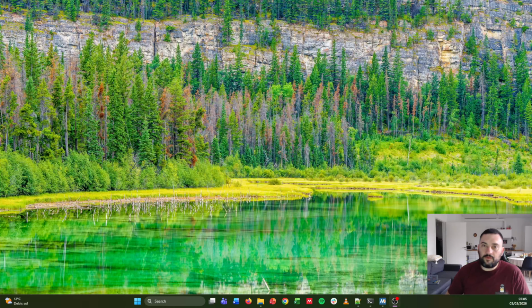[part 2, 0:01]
If you were watching our previous videos on SDK, in them we already covered Python SDK for Windows, Python SDK for Linux, and C SDK for Linux. What I'll do in this specific video, I'll reuse my Linux code, the code developed in Linux to control Raman. I'll reuse it on Windows. I'll show which modifications have to be done, which are very minimal, and then I will start with compiling the code. Then I'll do the live demo with Raman. We'll measure the Lightnovo polystyrene sample. In the beginning, I'm attaching it to the probe.
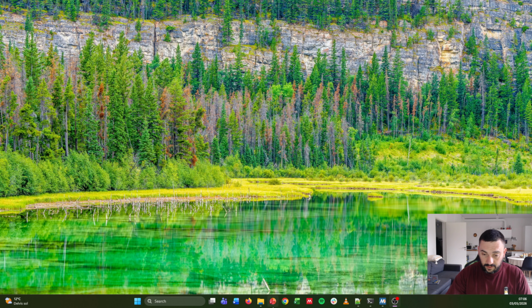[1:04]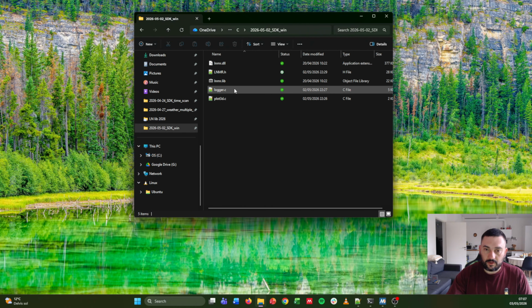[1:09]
So what we have here in my working directory, it's this program logger.c, which is the program controlling the spectrometer, then logging the data to the CSV file, streaming the data to another app which is performing live visualization. And plot3d is like a helper. It's not using our SDK, but it would be reading the CSV files which were logged. And then we have the components supplied with our SDK. It's .dll file, .h file, and .lib file.
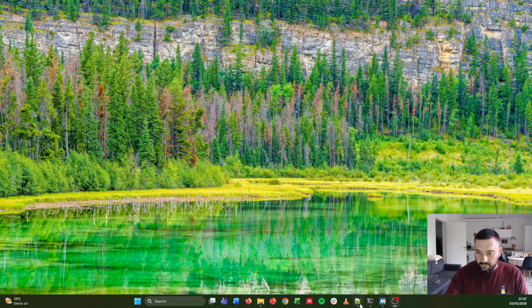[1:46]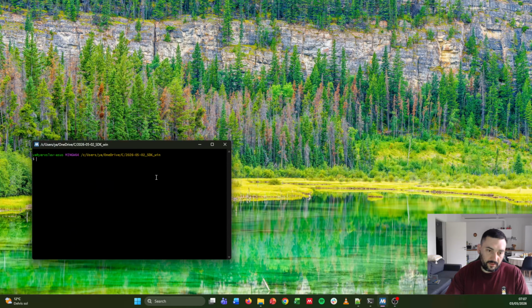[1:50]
On my system, I have a GNU minimalist installation of C for Windows with MinGW 64 terminal, but our SDK also works well if you compile the files with Microsoft Visual Studio components, I mean MSVC, the Microsoft version of C. Anyways, my terminal is using GCC, and I compile gcc logger.c -o logger.exe, and then we have to specify our DLL, Winema.dll, enter, boom, compiled.
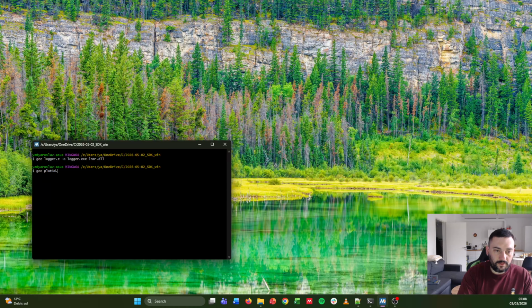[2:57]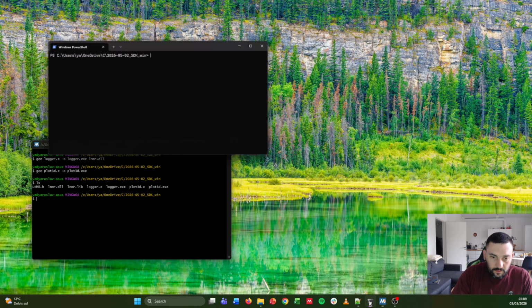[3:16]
The next step would be to compile plot3d.c, again -o plot3d.exe, and that's it, without libraries. Okay, great, and we check, and the files are there. Then we need to launch them. We need to go to Windows PowerShell, and it's dot backslash, so it's the other way as in Linux, and then we launch
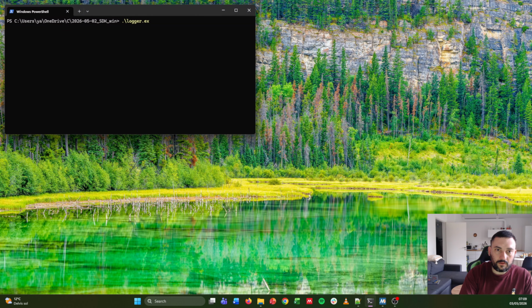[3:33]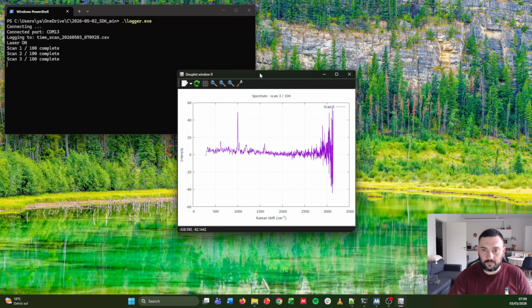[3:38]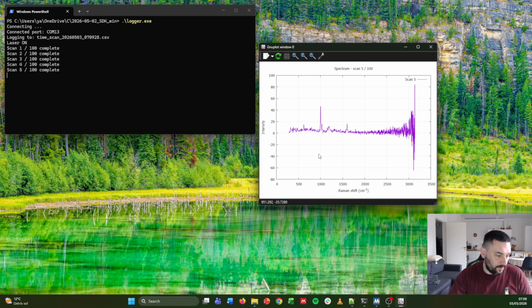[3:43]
logger.exe. And now we see the instance of GNU plot, and the app is performing the scans. In the beginning, it performed the scan of the ports, then it connected to the port to which Raman is connected, it's COM, then it started logging the data to the file with the timestamp in the name, then turns on the laser and performs the time scans. I limited the number of the scans to 100.
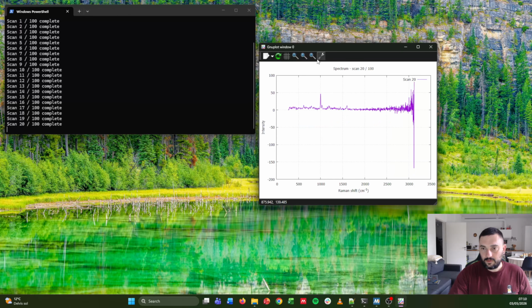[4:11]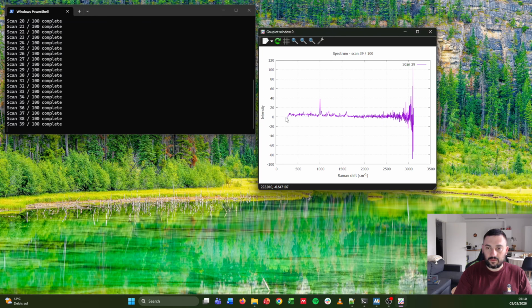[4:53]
The exposure time is exactly 300 milliseconds, but it takes a bit longer due to additional delays in the program as well as system specific delays, and it looks like the system specific delays are slightly longer on Windows than on Linux. That's why if you have a critical system, if you want to work with a real-time system, then it's advised that you use Linux, not Windows. Although for some workflows, for some pipelines, you need to stay with Windows if you use Windows specific tools, which also gives some power as well. So everything depends on your application. That's why we have so many different versions of SDK, basically 4 versions covering Windows, Linux, Python, C, 4 combinations in general.
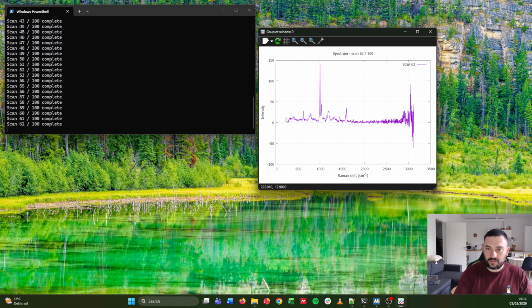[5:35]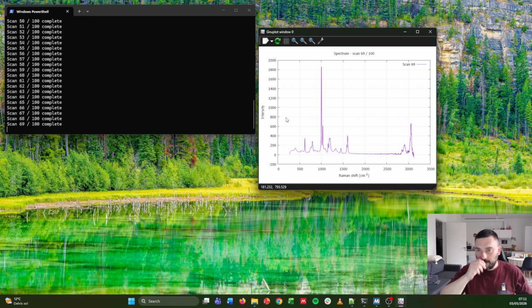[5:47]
So it's performed already 54 scans, but I see that the intensity was a bit low. Then I rotate the probe to increase the intensity so that we see some dynamics in the scan. So now the intensity is much higher. Let's wait for a while, and then I'll try to expose it to sunlight, and I'll point it in the direction of the sun, and we'll see how the 3D scans look like. Scan 76, 77. Let's wait. Okay, let's expose it to the sunlight,
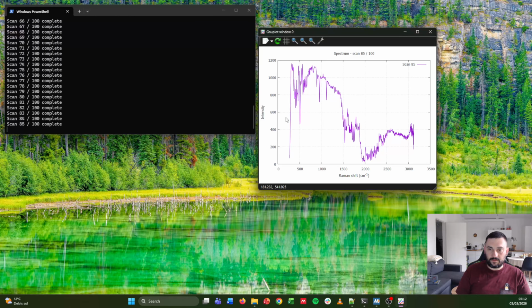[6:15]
and we see a solid spectrum with specific dips due to atmospheric absorption. Scan 91, 92, 93. Yeah, it's approximately slightly longer probably than 1 second. Definitely the performance of the same code was faster on Linux. You can watch the Linux video and you can compare. So we logged it, laser off, closed, done. Let's close the GNU plot
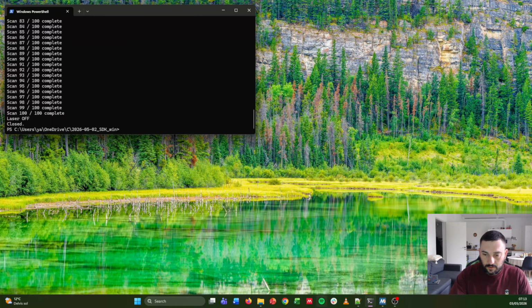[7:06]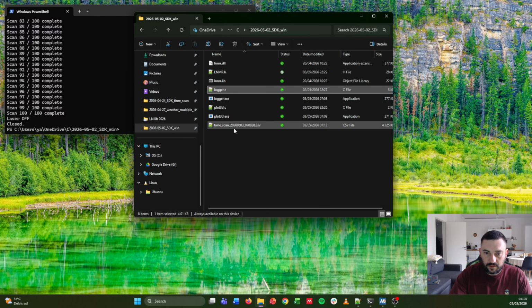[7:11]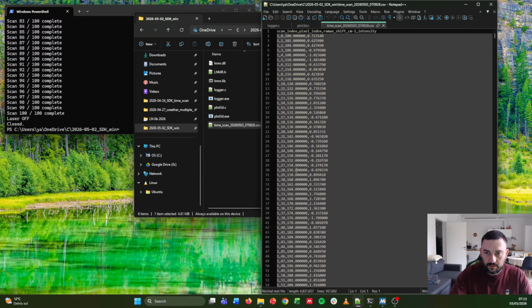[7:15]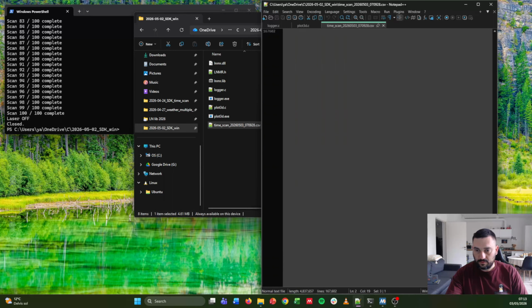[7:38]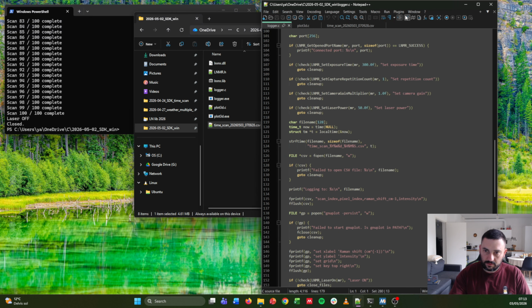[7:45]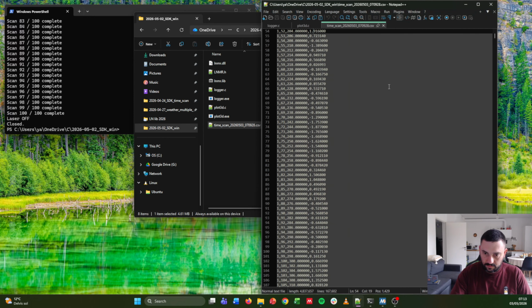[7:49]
and let's go to the folder over here, and then we have the timescan file appearing, and we double click on it, and as you can see, there are multiple columns in the file: scan index, then we have pixel number, pixel index, we have the Raman shift column, and we have the intensity column. And if we scroll down, Control N, we have 100 scans and 167,601 lines in the file.
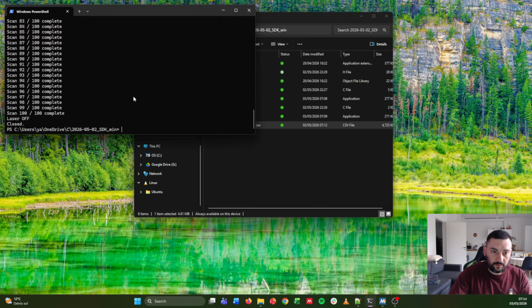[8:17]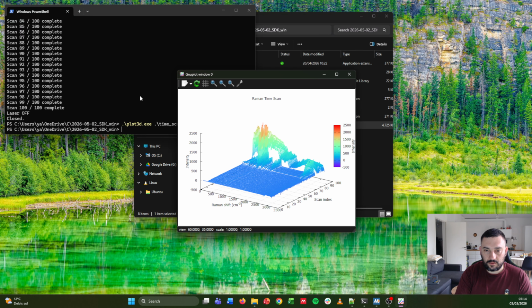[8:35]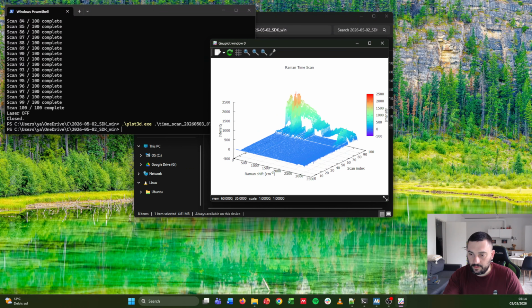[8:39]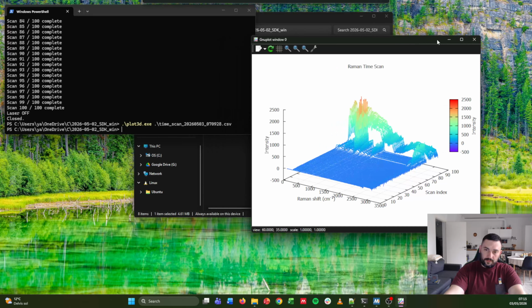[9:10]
So let's go back to the terminal over here, and we'll use plot3d.exe, and we supply the file name as a shell argument, launch. And this is what we have now. As you can see, in the beginning, if you remember, we had relatively low intensity of polystyrene here. Then we increased the intensity of polystyrene. It's like from the time scan from over here to over there. And then the last scans, they were solar spectrum. So I think this type of visualization looks really nice when we use the GNU plot engine.
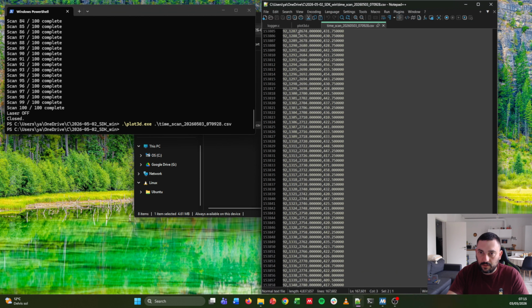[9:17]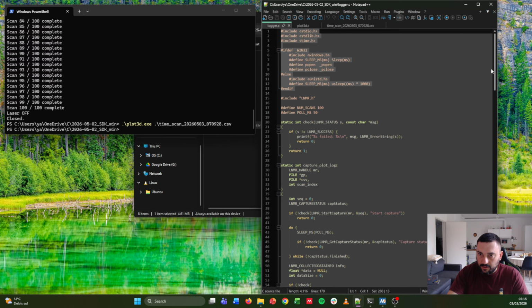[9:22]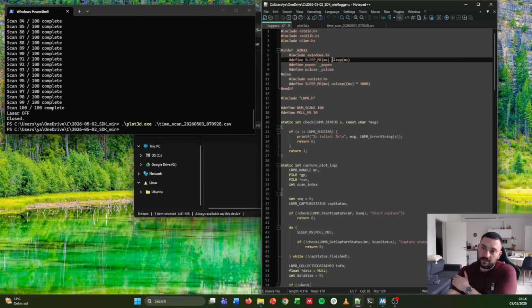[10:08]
Okay, so I actually promised to go through the code a little bit and explain what has to be modified when we port this app from Linux to Windows. Over here, this is the same, and the only difference is over here. Basically, this describes the difference and the fix. So in Windows, it's windows.h, so a system specific library, while in Linux and Unix it's unistd.h. And they have some differences. The delay in Windows is the function Sleep in milliseconds, while in Linux it's usleep in microseconds.
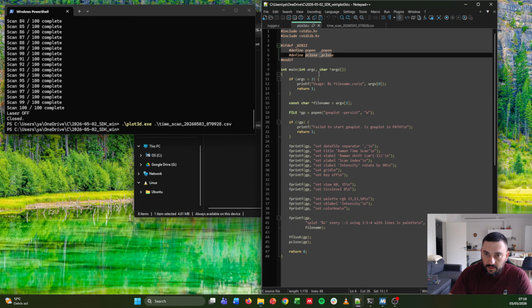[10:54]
Then in addition to that, the call to the external app, which was gnuplot in our case, it's popen in Linux and _popen in Windows. And the same with pclose. So these were the only modifications which had to be done. And as you can see, they have nothing to do with our LNMR code. In plot3d, again the same thing, and over here it's only popen changed to _popen, pclose changed to _pclose.
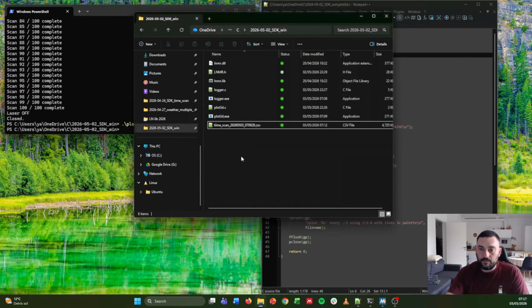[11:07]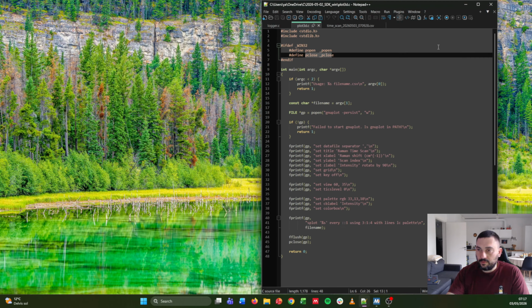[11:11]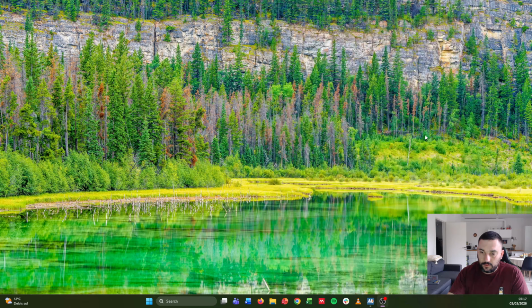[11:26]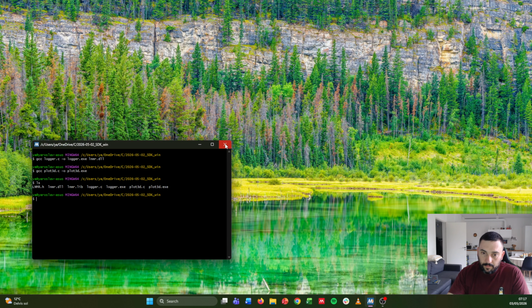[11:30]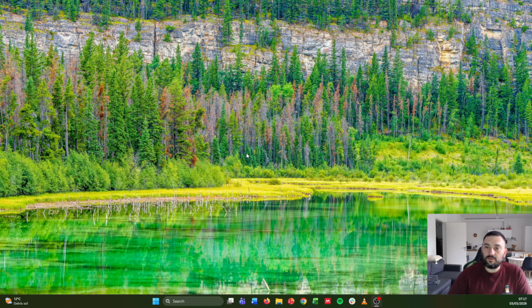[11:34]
So I hope that this video was a clear demonstration of the capabilities of Lightnovo C SDK on Windows, as well as showing the possibility to port an app developed in Linux to a Windows system, or the other way around in some cases. And it concludes the initial series of videos on different flavors of SDK from Lightnovo, which are Windows, Linux, Python, and C, so 4 different combinations of those.